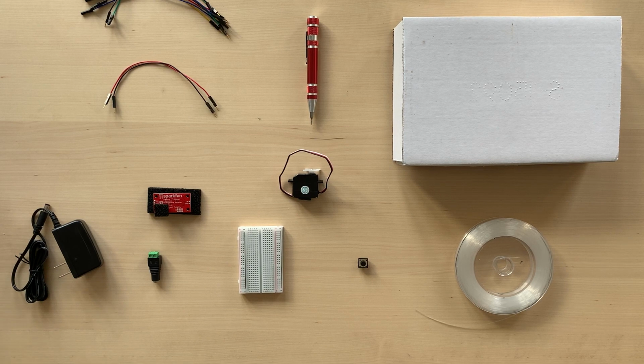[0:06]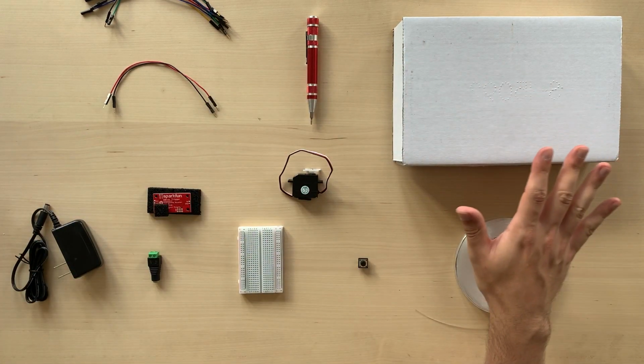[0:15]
Today we are going to build together the Co.Lab robotic arm kit that can perform a gripping motion. Here are all the tools that we will need.
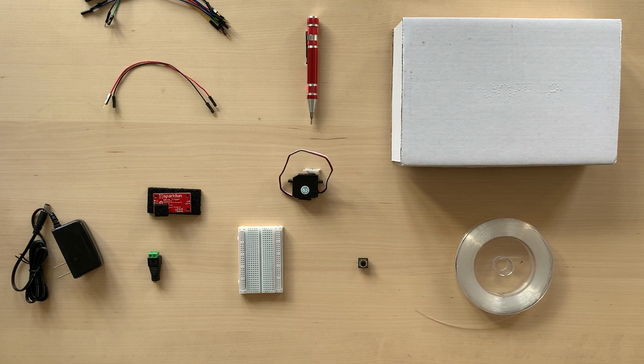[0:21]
The box the kit came with, some clear wire, a button, a breadboard, a barrel jack, a DC wall adapter, a servo trigger, a servo, screwdriver pen, a male-to-male jumper wire and a male-to-female jumper wire. We also need a pair of scissors, which doesn't come with the box.
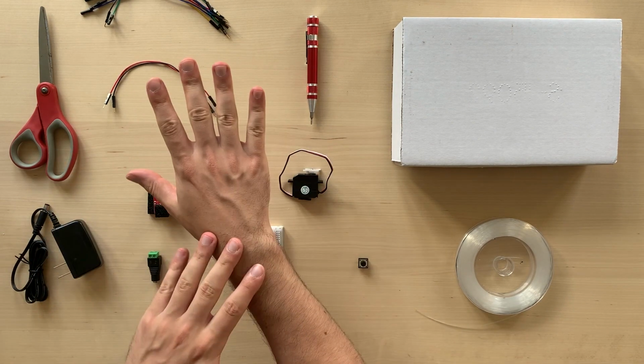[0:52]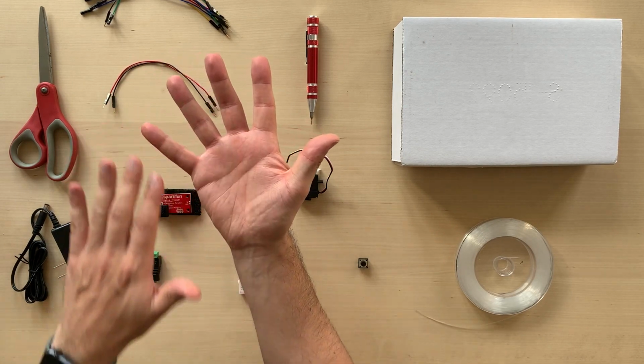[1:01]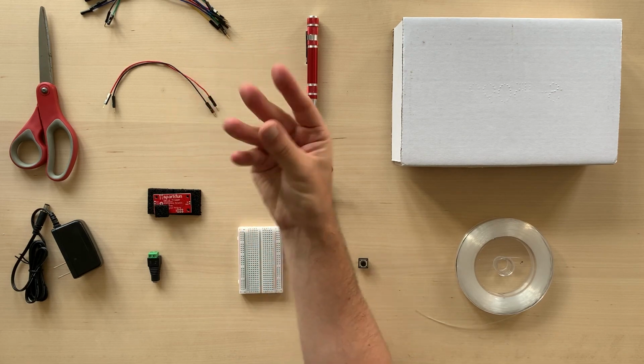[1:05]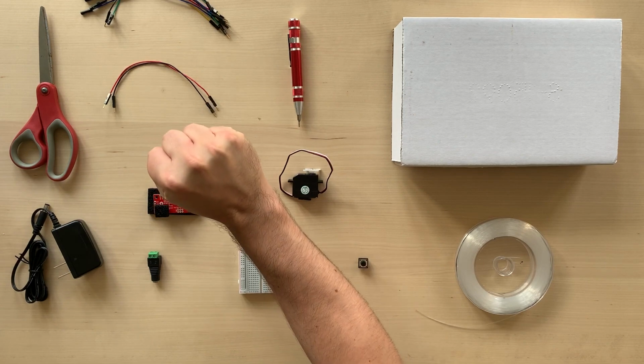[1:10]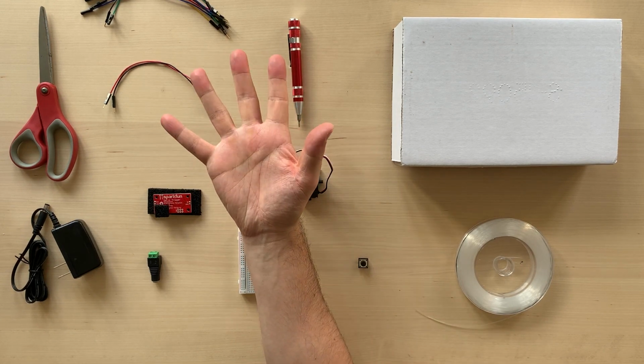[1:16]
So let's think for a second. What does a hand do? The human hand is a complex machine made up of skin, muscles, bones, nerves, and it allows us to grip items in many ways and with many different types of power. Think, for example, the difference when you're holding a pen versus when you're holding a heavy bag, right? Hands are really difficult, and because they do so many things, we will focus on one thing today, the gripping motion.
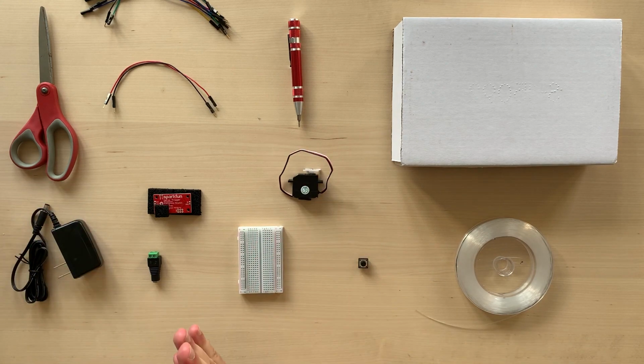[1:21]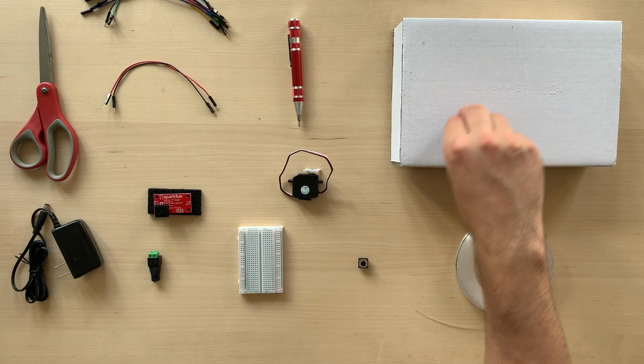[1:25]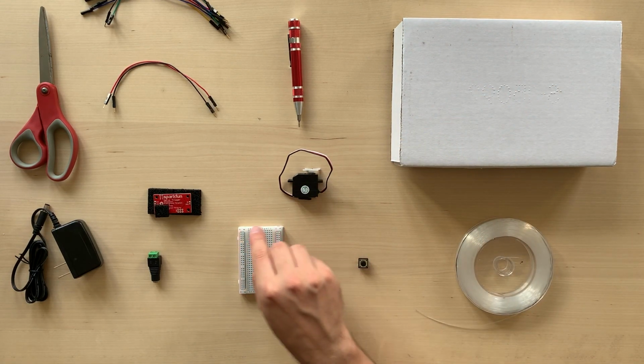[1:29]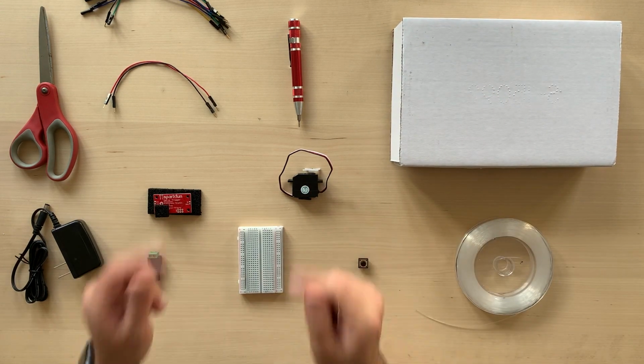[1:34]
To do this, we will use the cardboard box to build a simple hand, connect it to the servo, our motor, and then create a circuit to bring the power to the servo motor and move the hand. Let's start with our how-to.
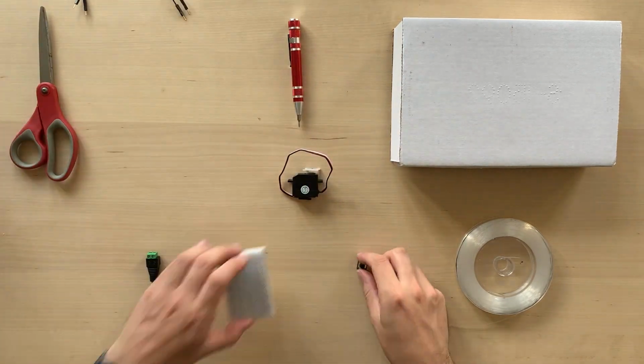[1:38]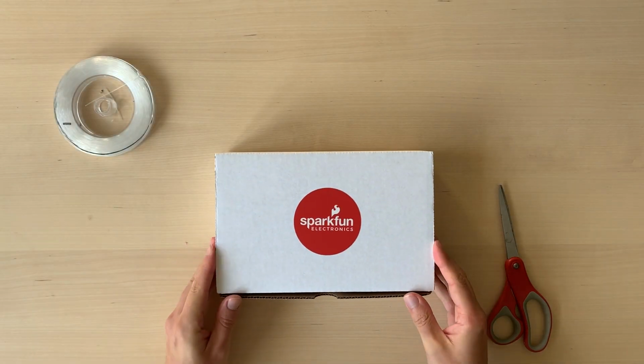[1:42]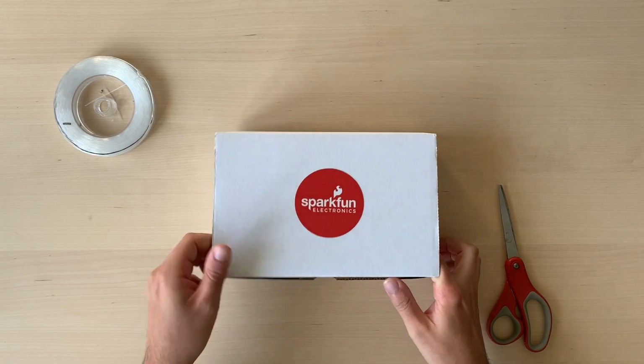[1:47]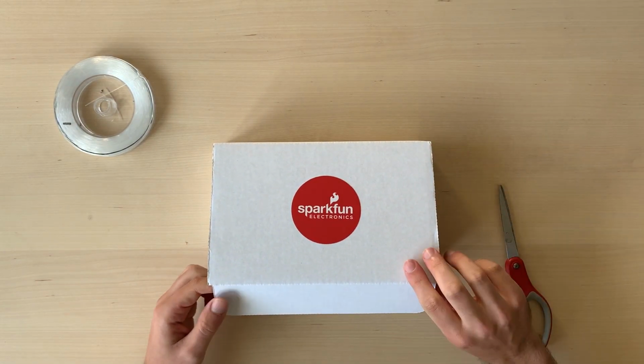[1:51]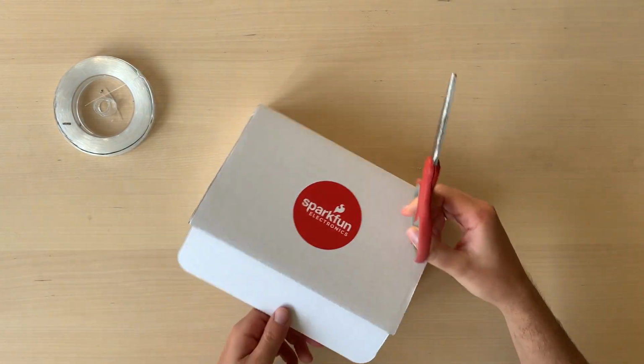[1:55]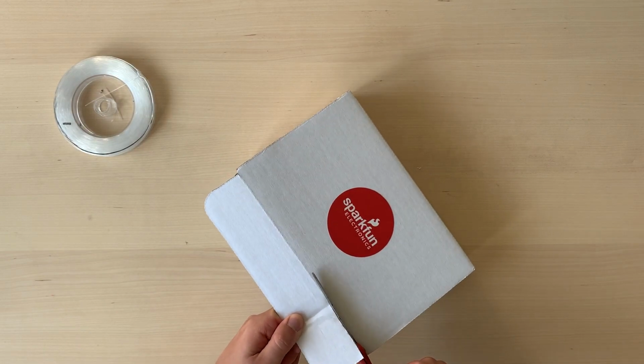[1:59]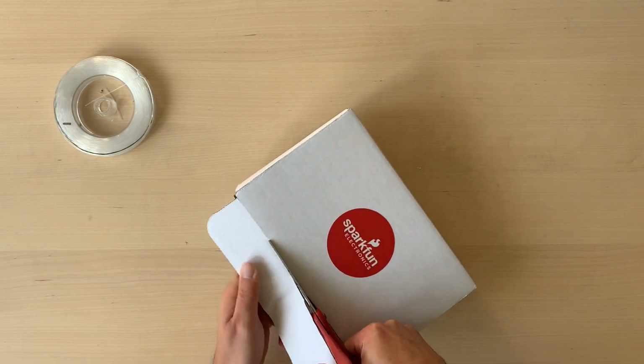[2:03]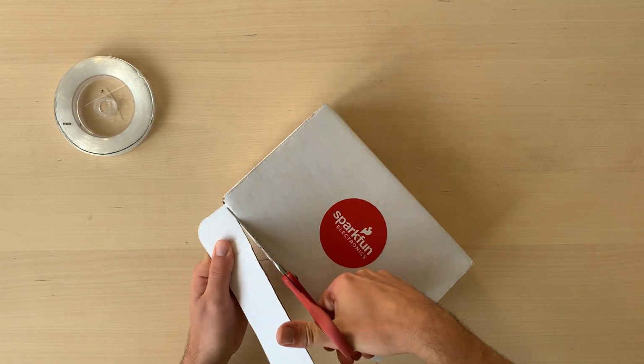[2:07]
Let's start with the box. This will become our hand, and to do this, start with the box opening facing towards you. The first thing that we need to do is to clear out the top of the box. The top of your box will probably have some flaps around, so we need to make sure to cut them out, like I'm doing now, and I'm just going to remove the first one.
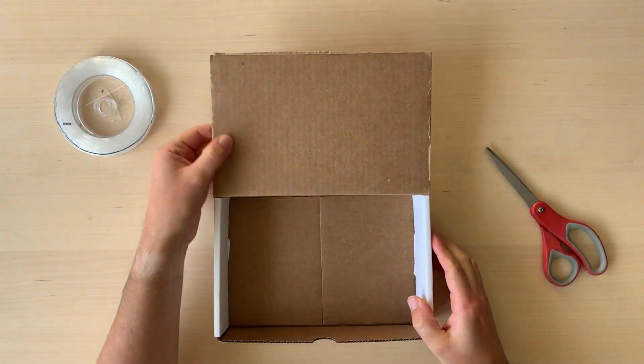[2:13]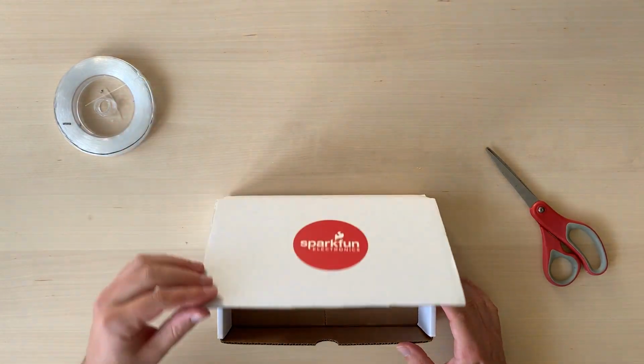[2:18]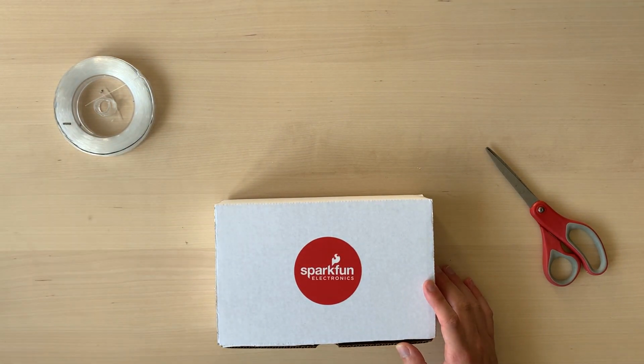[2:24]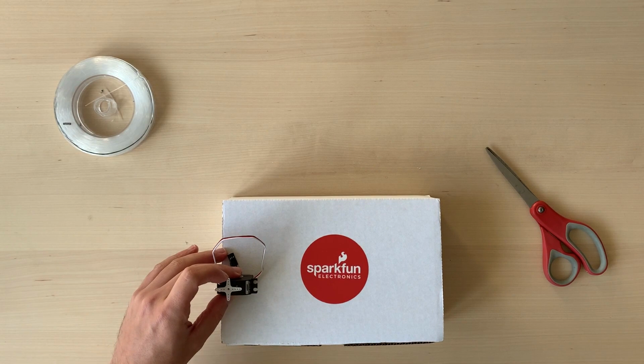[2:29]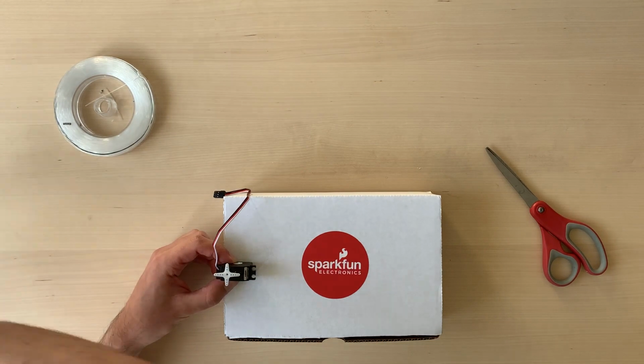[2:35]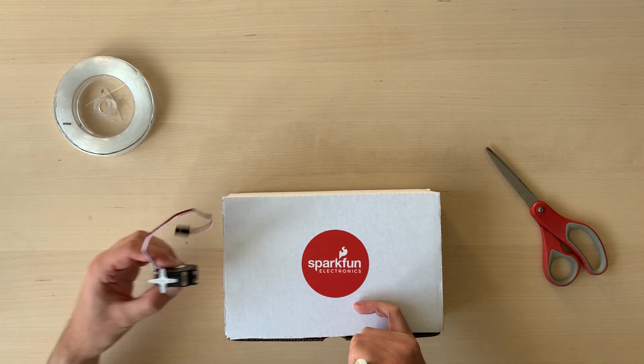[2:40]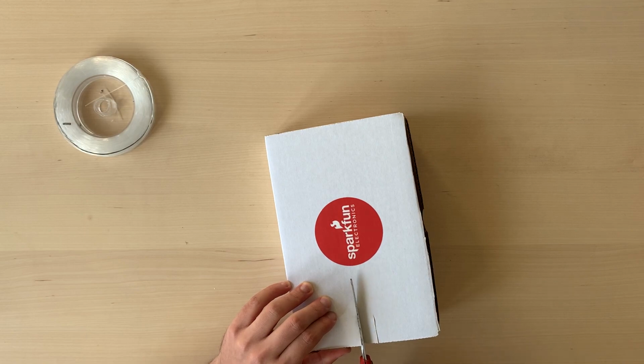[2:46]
Take your time, the cardboard could be a bit thick, but with a bit of patience, you should be able to get your lid nice and tidy, just like that. Now, on the left side of the lid, we need to create the space for our servo, our motor. And a good rule of thumb here is to use the servo to decide how big the incision has to be. I like to trace the outline with the little screwdriver to have a guideline. And then with my scissors, I take my time and I cut it out.
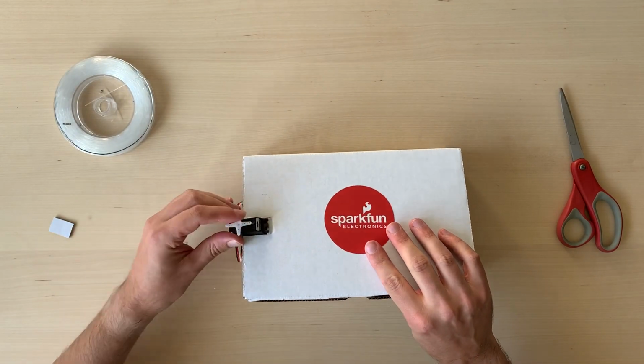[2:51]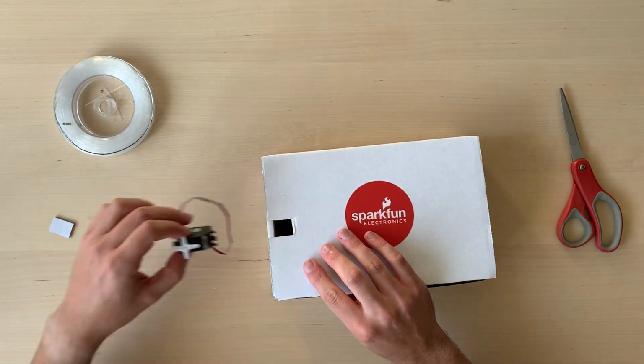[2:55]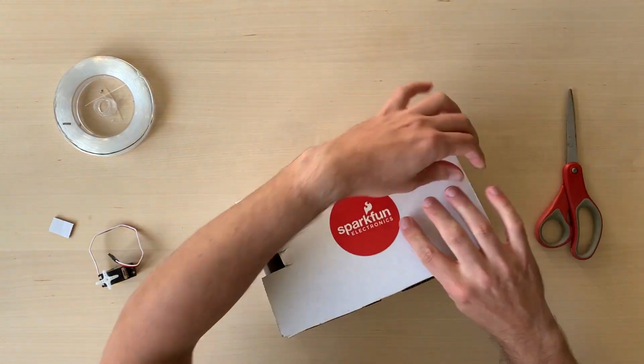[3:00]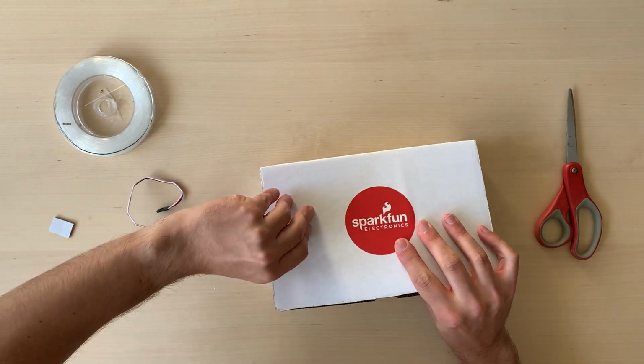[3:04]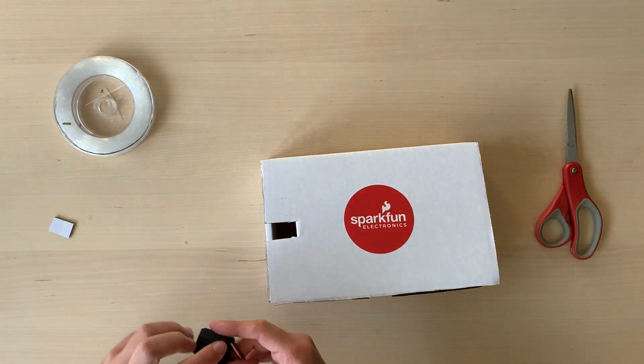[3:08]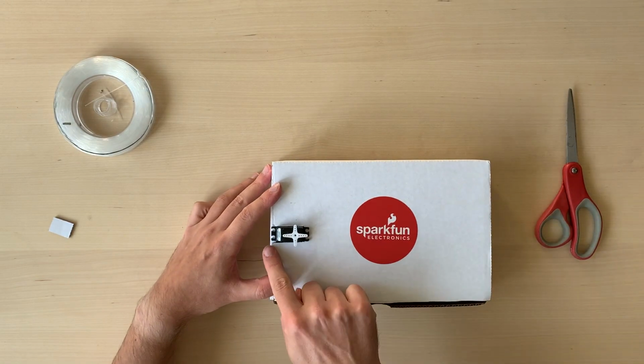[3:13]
Here I'm doing a little test to see if it actually fits. And it may take a test or two, and don't worry, it's okay if it takes a bit of time. The idea is for the servo to sit on top of the lid so that the bottom wire can connect inside of the box. So in this case, I'm opening up just a little bit more to make a bit more space so that the servo can sit comfortably on the side of the box.
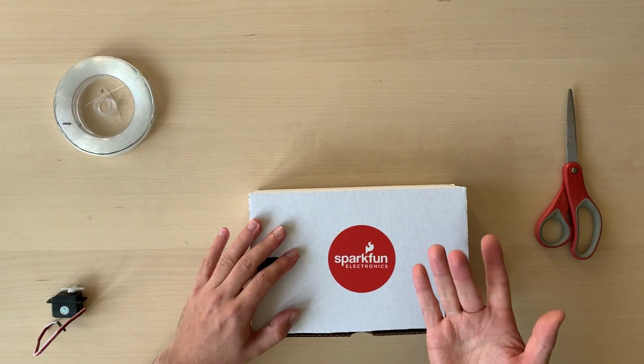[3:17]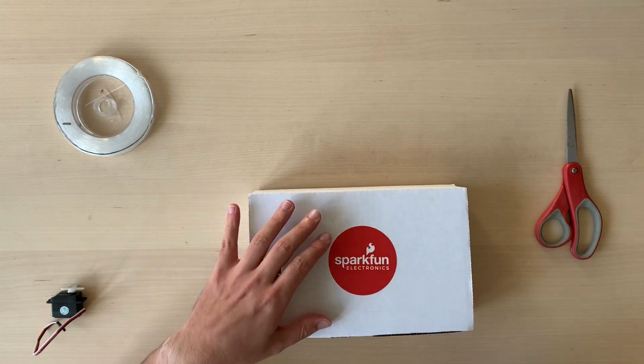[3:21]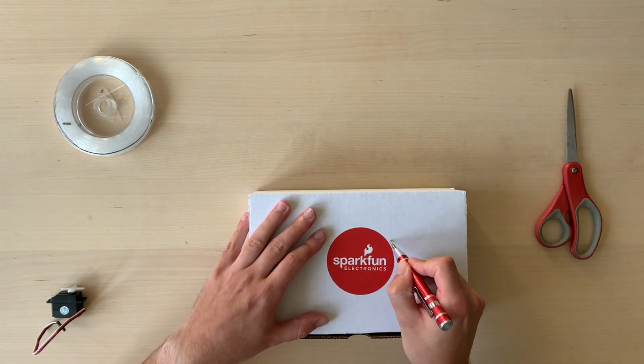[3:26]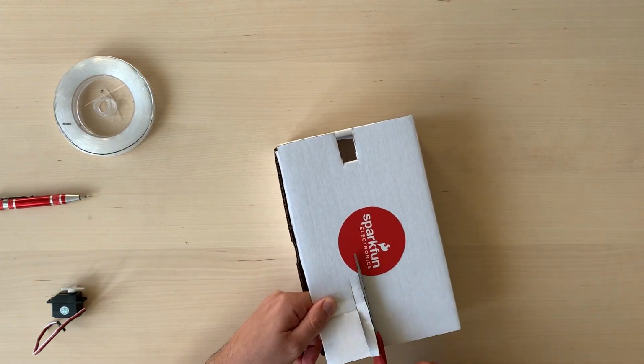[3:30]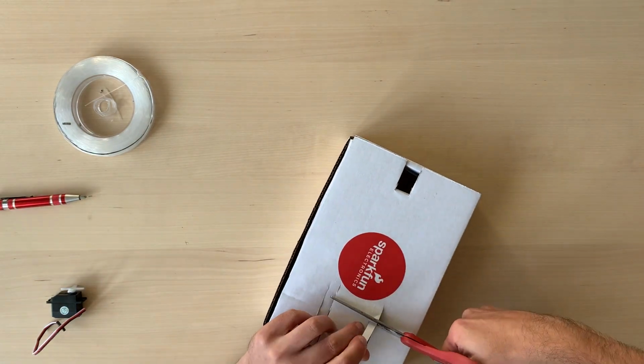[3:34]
On the right side of our box, we need to create the fingers for our hand. And in our case, we can create three fingers. We can just cut some small rectangles out of the right side so that we are left with three fingers.
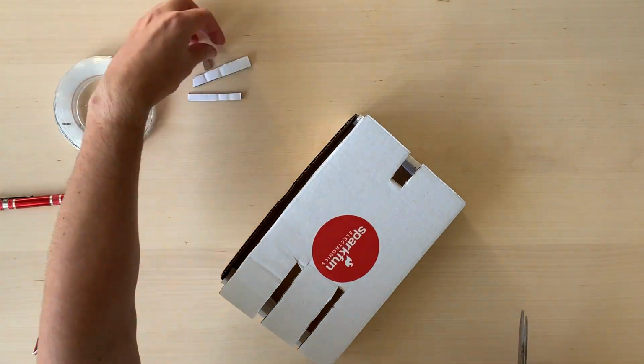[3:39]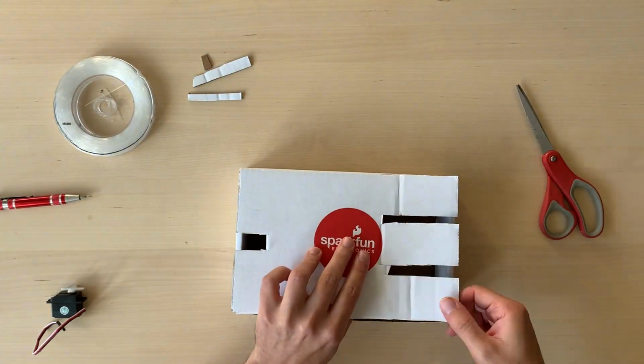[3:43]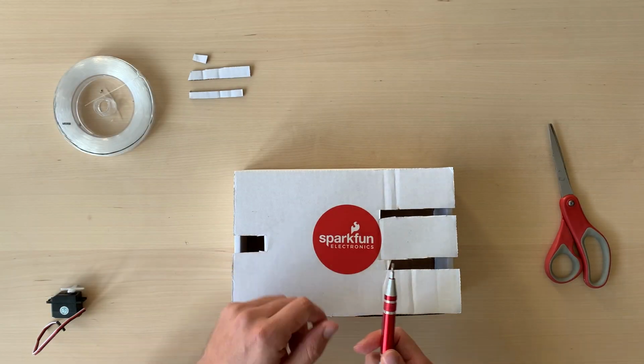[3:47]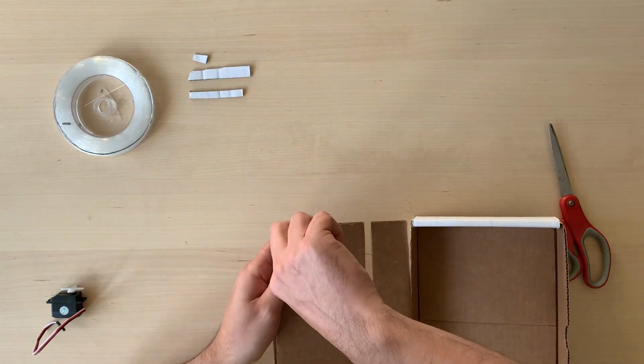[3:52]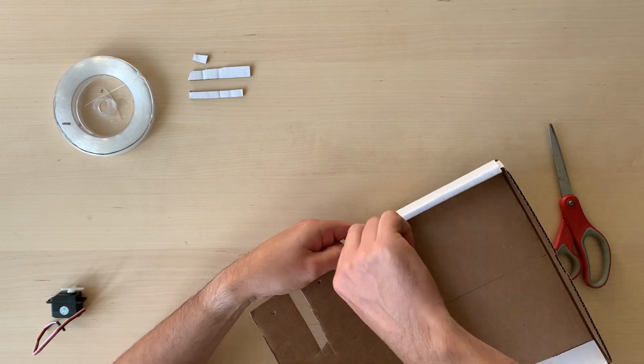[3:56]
Now we need to create some little holes in our fingers in order to connect the wire that will actually move them. So using the thinnest tip of the screwdriver, I recommend opening the lid and just piercing at the top of the finger, just a tiny little hole, enough to let the clear wire pass through later.
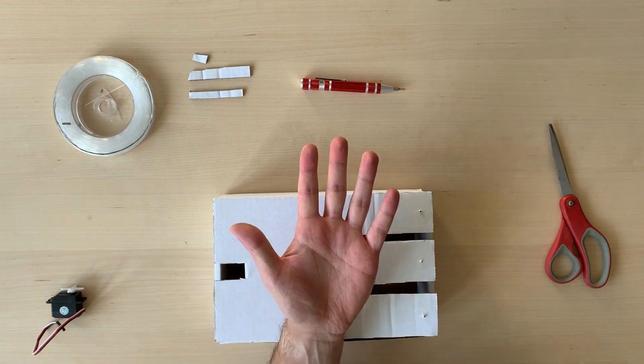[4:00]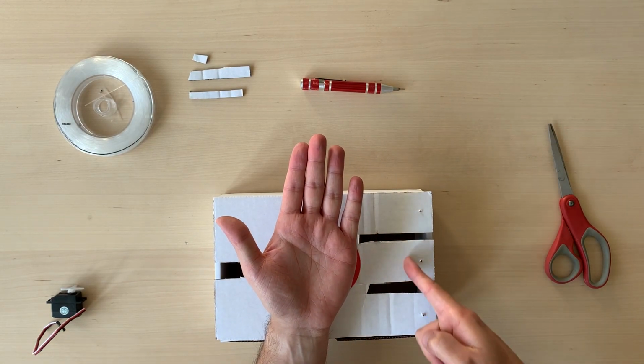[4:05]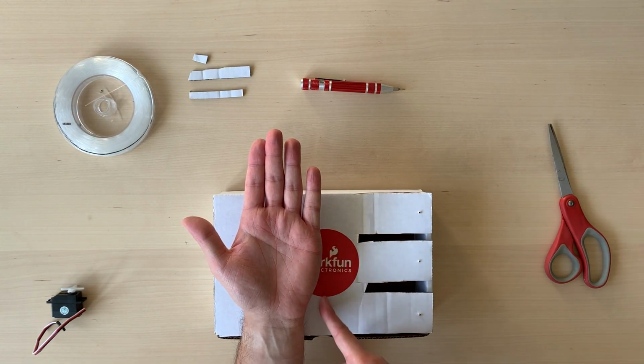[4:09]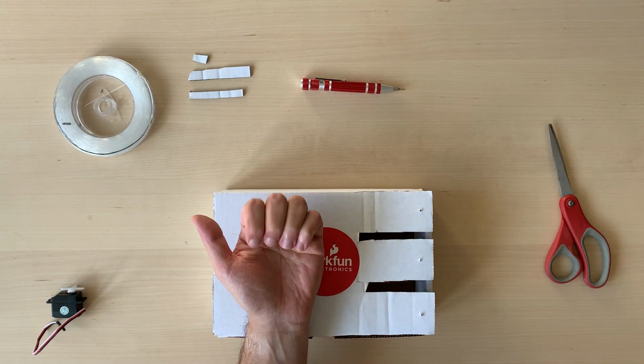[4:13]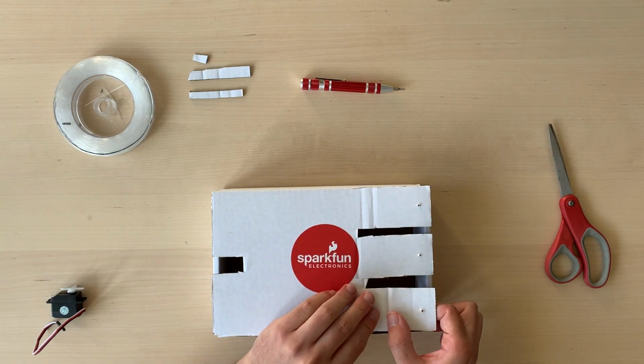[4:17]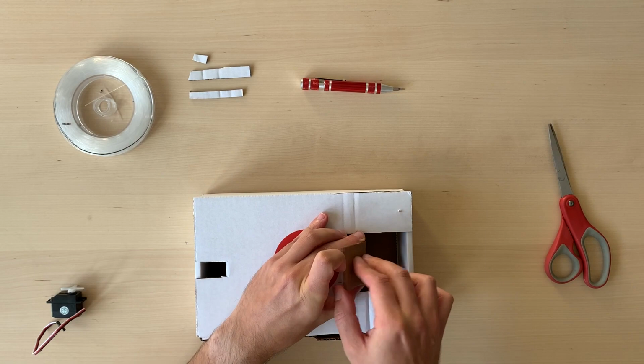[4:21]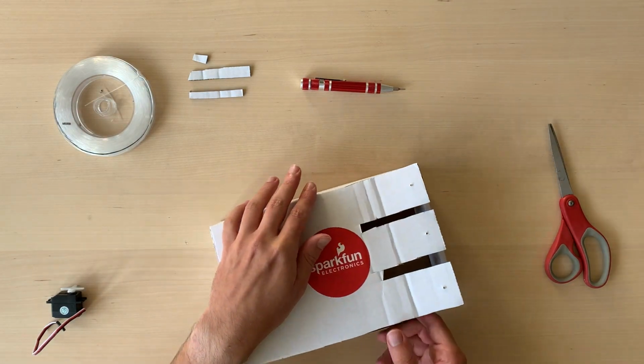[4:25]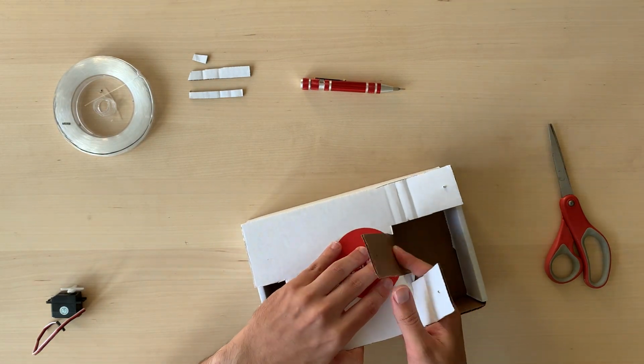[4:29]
The next thing we need to do is to bend them, just like normal fingers. We will do three folds in our case. One at the top, one where they connect to the rest of the hand, and a third fold a little bit before the fingers to simulate how the hands fold. So this could be one, this is the second, and that's the third finger. So first bend, done. Now we bend them where they connect to the box.
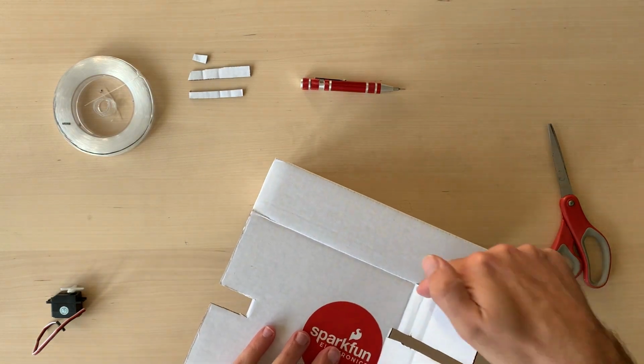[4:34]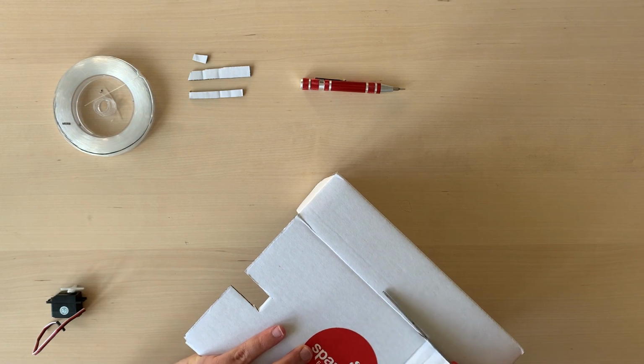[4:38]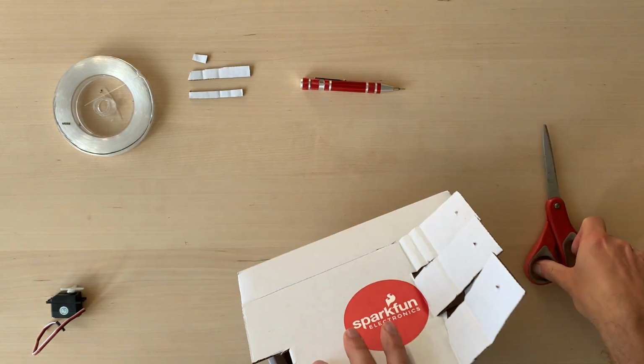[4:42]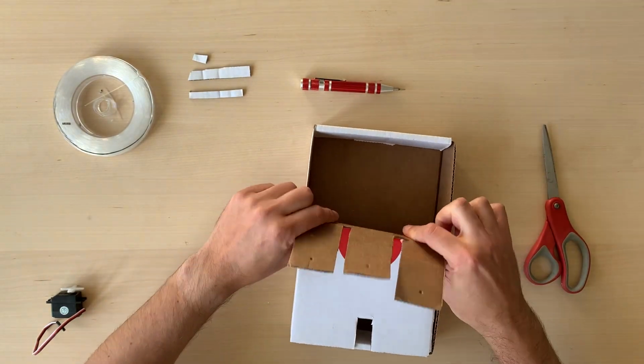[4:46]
Very good. And to do the third one, we actually need to extend the cut just a little bit. So using the scissors, I will cut through just a little bit more. And this will allow us to do a third fold of the whole hand. Look at this, perfect.
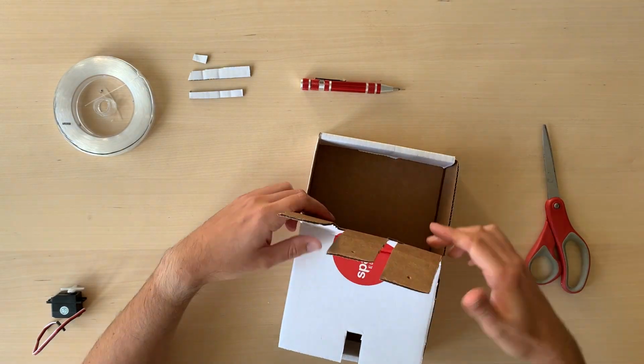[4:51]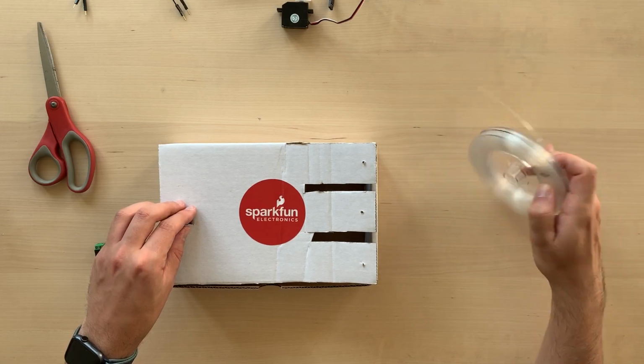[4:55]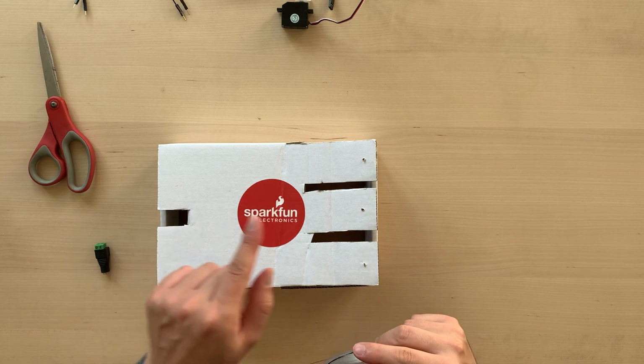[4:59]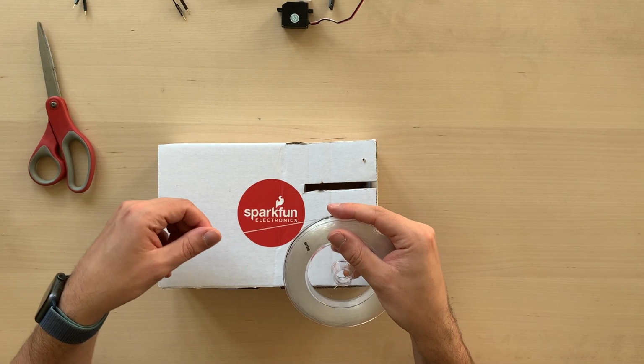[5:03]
Looks like a hand ready. Now, it's time to connect them with the wire. There is a very easy measure for the wire, which is 1.5 length of the box. And this is a very easy way to measure it together with me.
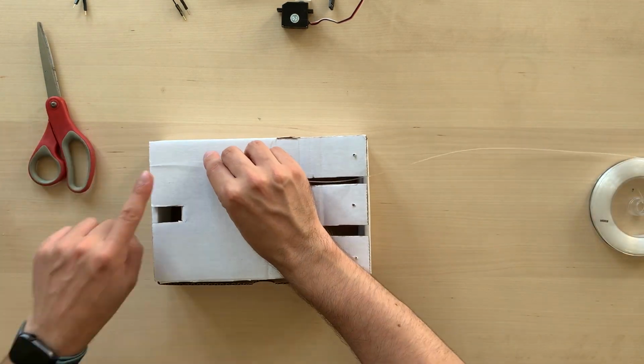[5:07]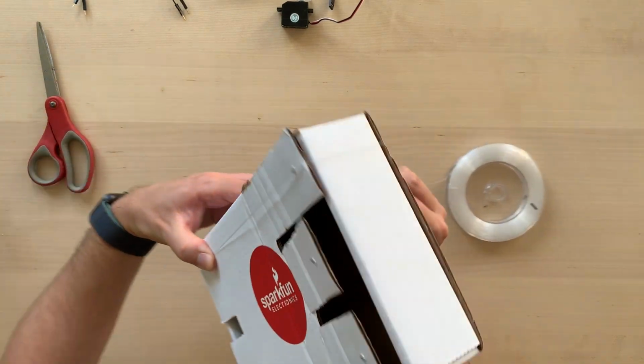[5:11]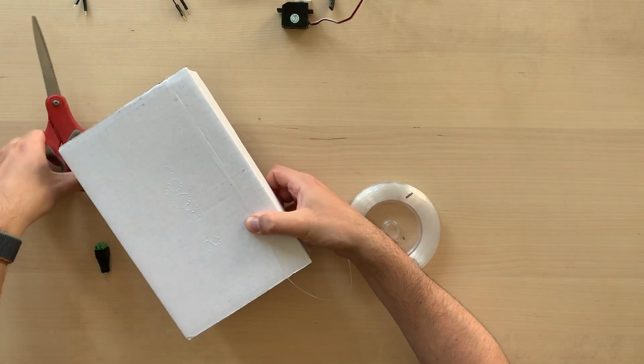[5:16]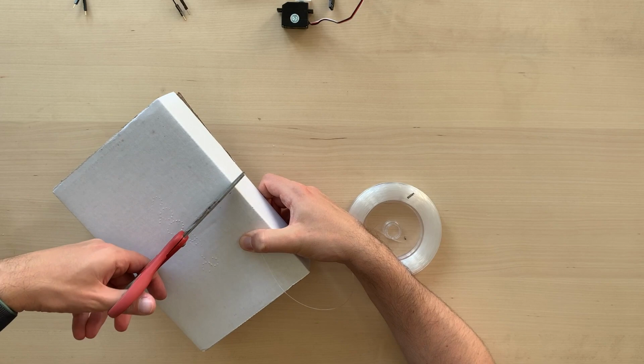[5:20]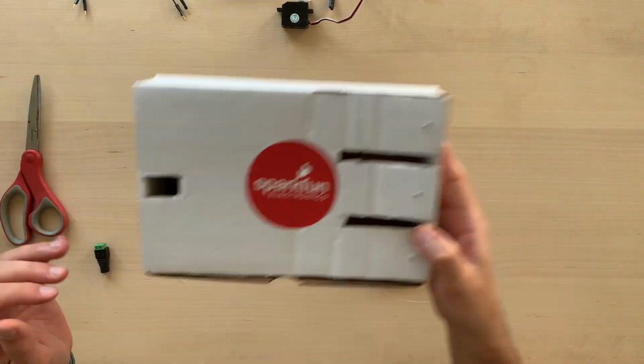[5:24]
So we put one side of the wire at the beginning of the box on the top, we run it all around the box on the other side, and then we cut it halfway through the back. This will give us 1.5 length of the box. Nice and easy. Now, we need three wires because we have three fingers, and an easy tip to save a
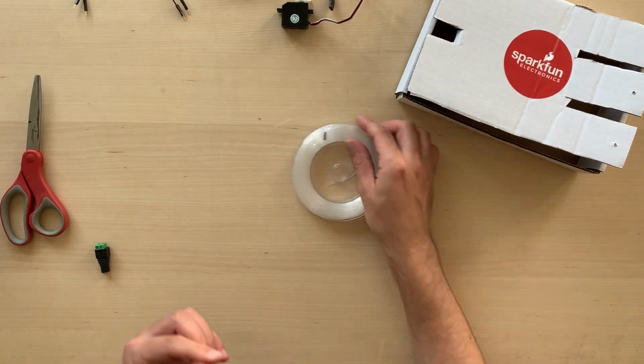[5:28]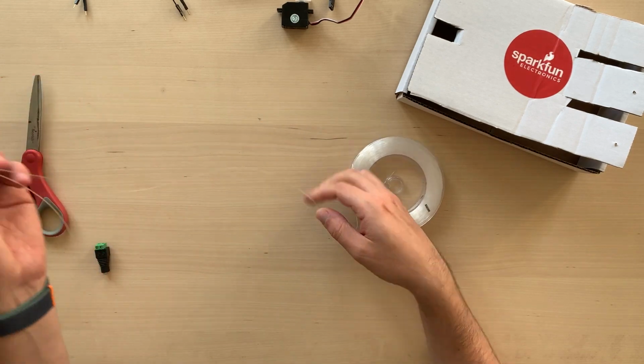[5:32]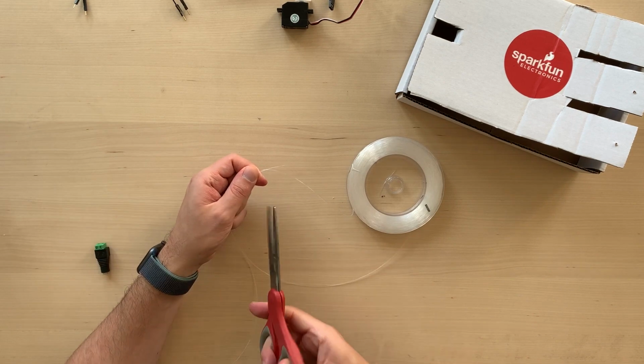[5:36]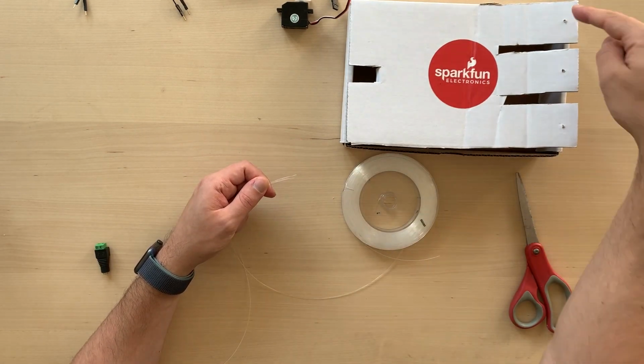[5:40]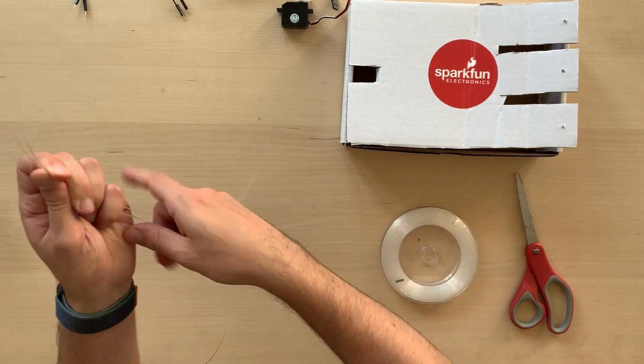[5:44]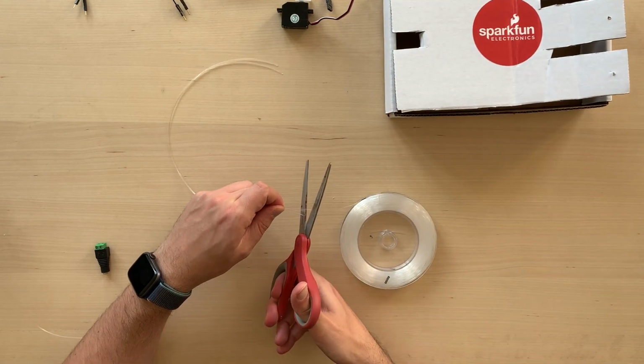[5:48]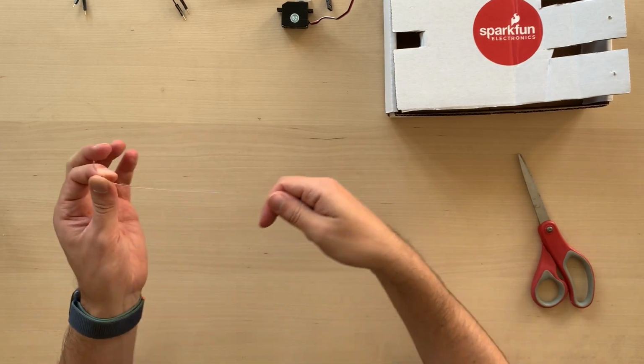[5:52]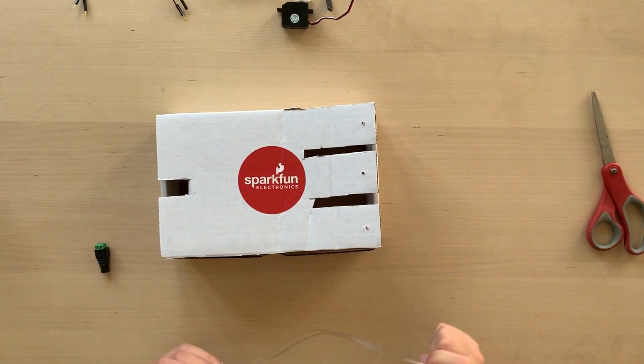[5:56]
bit of time instead of measuring all the time is to use the first wire to measure the other two. So here's my second wire, cutting that out, and the third one for the third finger, of course. We use the same little trick. And cut. Perfect. Now we have the three clear wires for our fingers, and we can start connecting them.
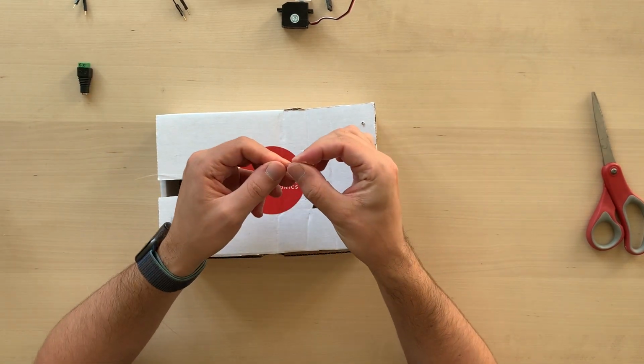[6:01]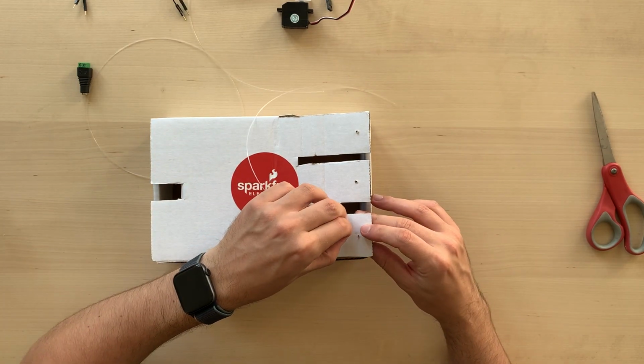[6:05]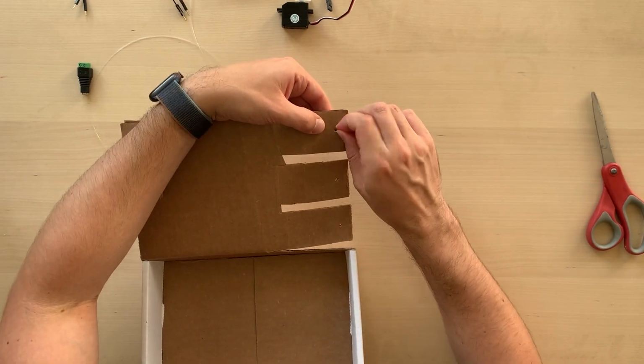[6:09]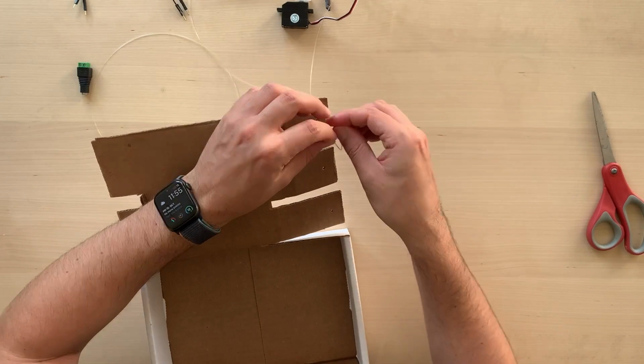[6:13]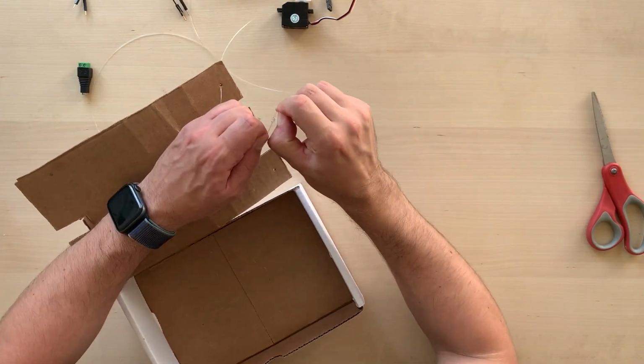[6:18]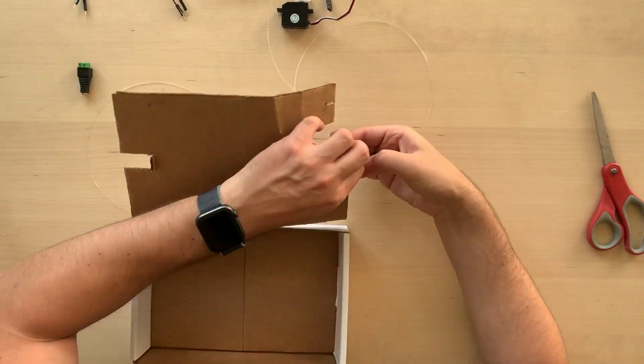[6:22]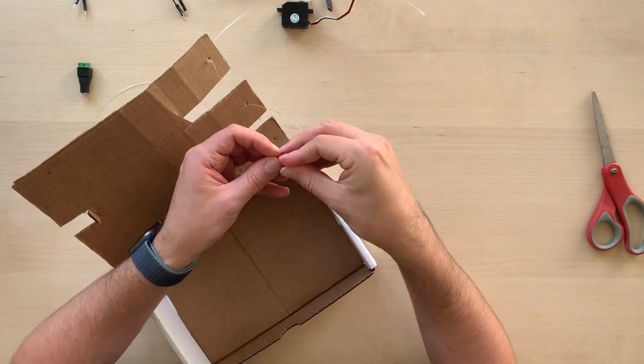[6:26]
What we need to do is to run the wires from the top into each one of the little holes and tie them with a little knot underneath the lead, just like this. We turn it over and then we tie them up. I suggest doing a double knot just to make sure that the wire stays nice and safe. Don't worry if the clear wire is a bit hard to bend to do the knot. It took me a little bit of practice, so make sure to take your time.
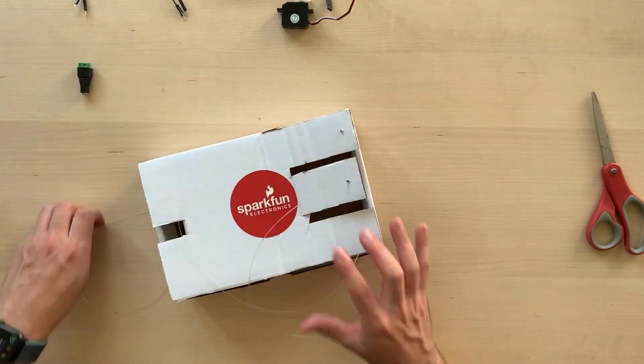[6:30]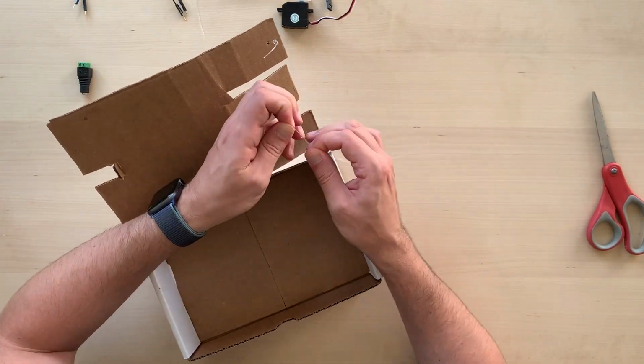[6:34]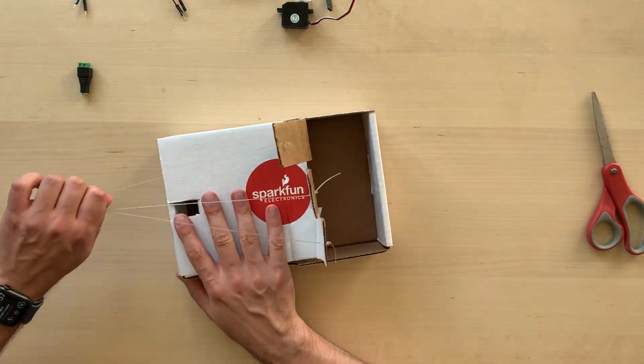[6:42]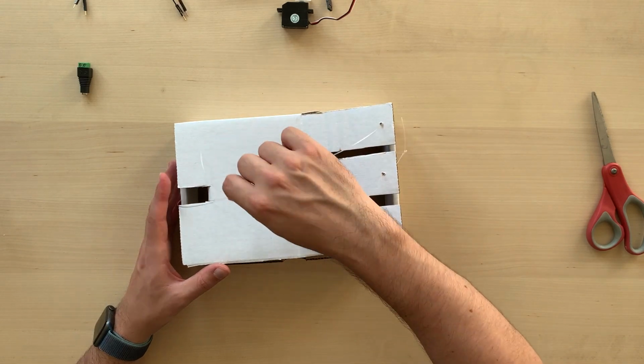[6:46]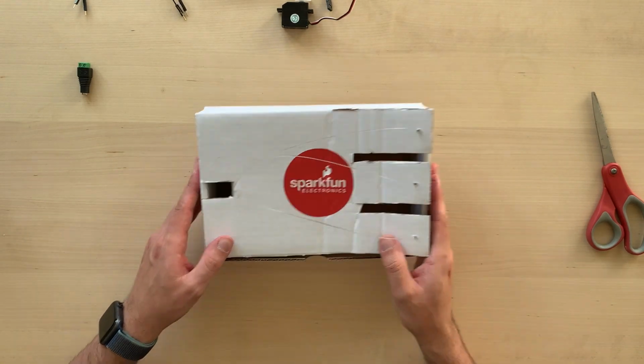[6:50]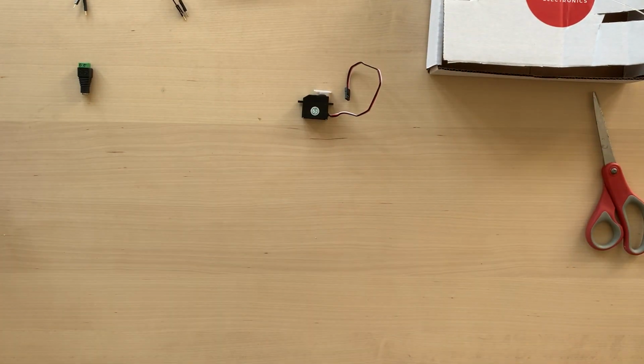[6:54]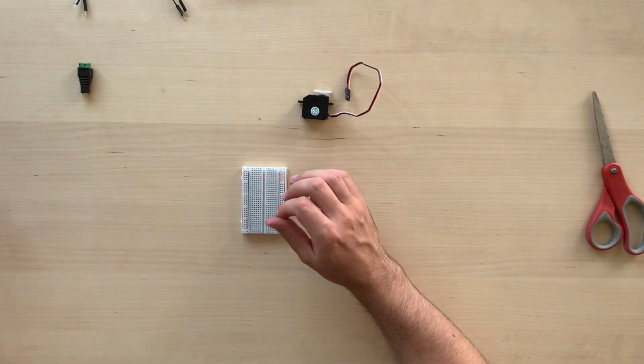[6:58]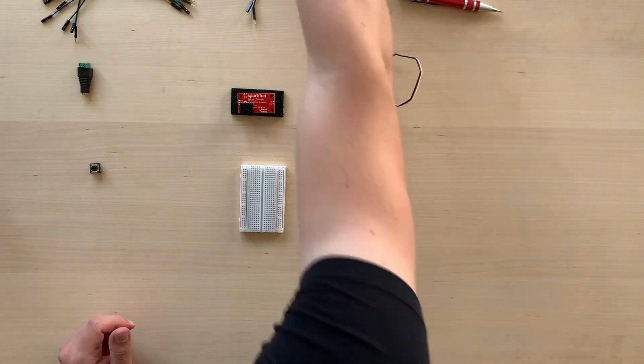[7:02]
That should do. Perfect. So now we have our three wires, and you can see how they will eventually connect on the other side where the servo will be. But for now, the hand is done and we can move forward to the next part of our build, which is the circuit. What is a circuit?
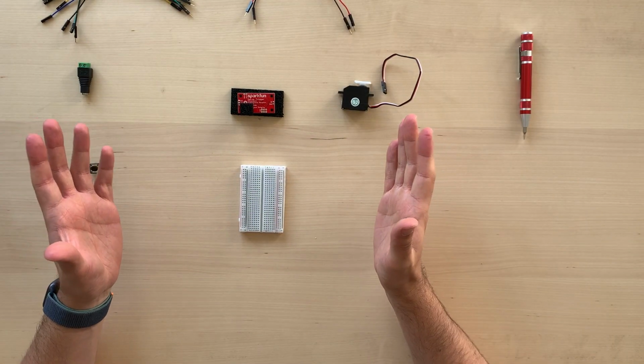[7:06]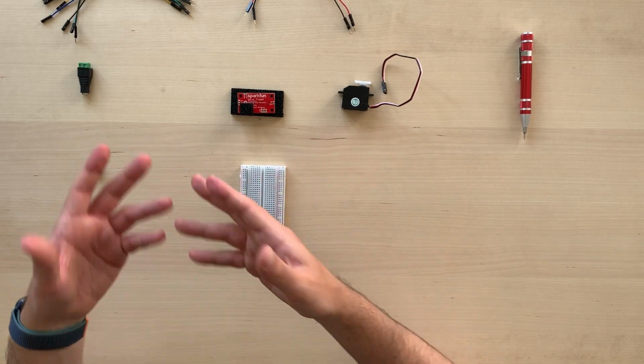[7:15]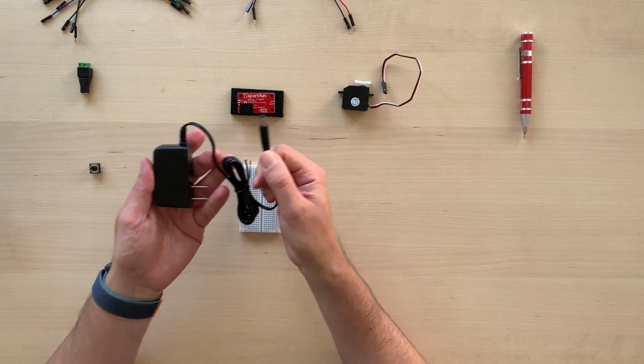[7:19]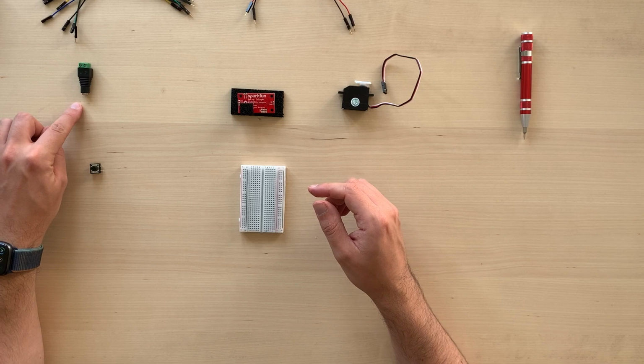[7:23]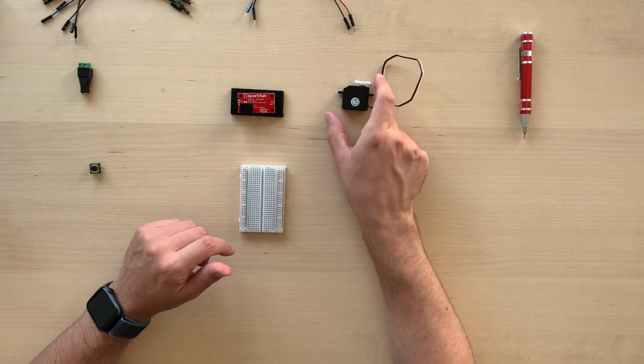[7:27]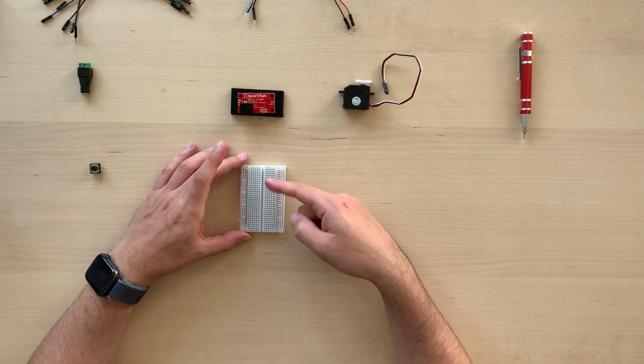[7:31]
Normally, every circuit is a closed loop of electricity that can travel around. And every circuit at least has a power source. In our case, we have a wall adapter. In our case, this will connect to a barrel jack. And then we have a load. That's what's being powered. For us, it's going to be the servo. And then a circuit path, which is the actual path where the current will flow.
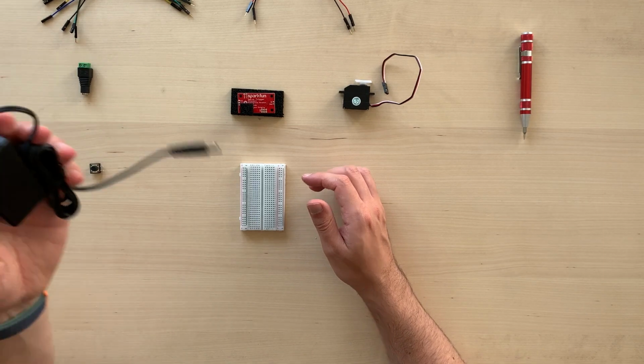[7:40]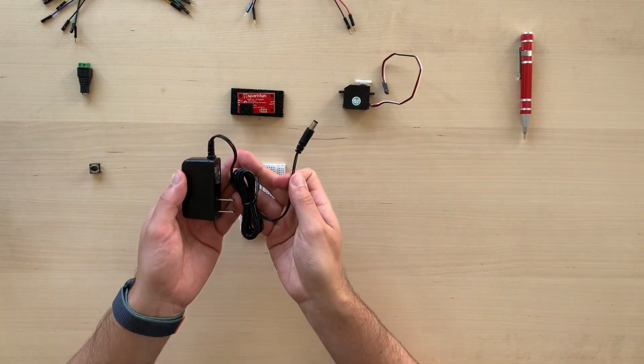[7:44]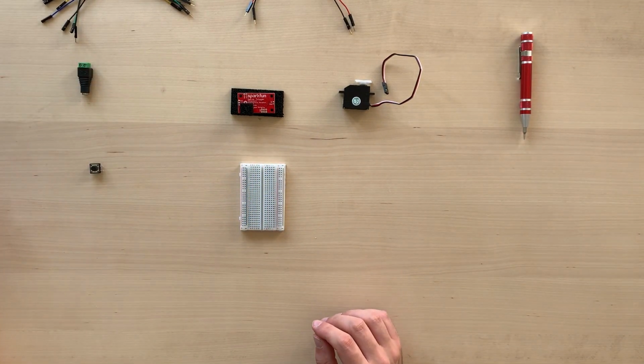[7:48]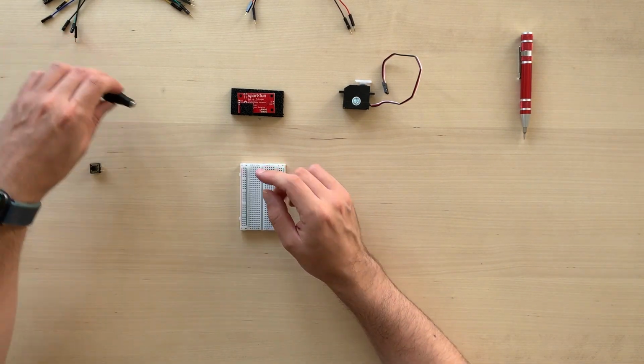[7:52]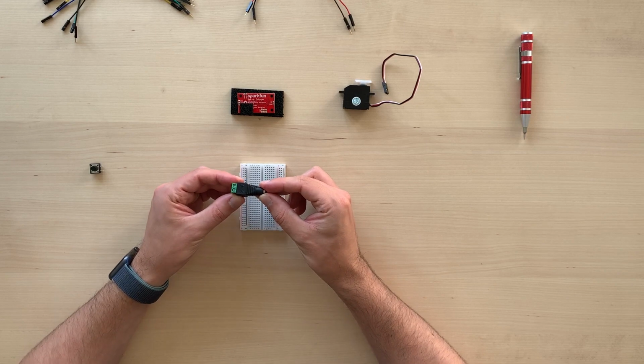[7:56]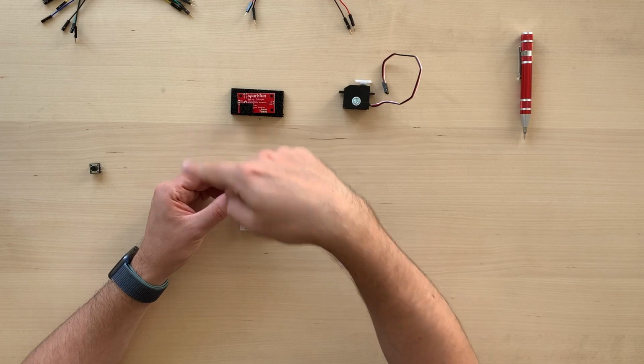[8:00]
In our case, because we use a wall adapter, we want to make sure that this is the very last step. So for the time being, let's leave the wall adapter on the side and let's focus on preparing the barrel jack. The barrel jack will bring the current into our breadboard, so we need to prepare it and connect it using jumper wires into the breadboard.
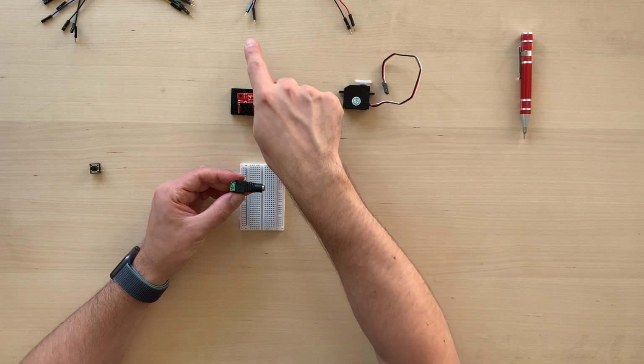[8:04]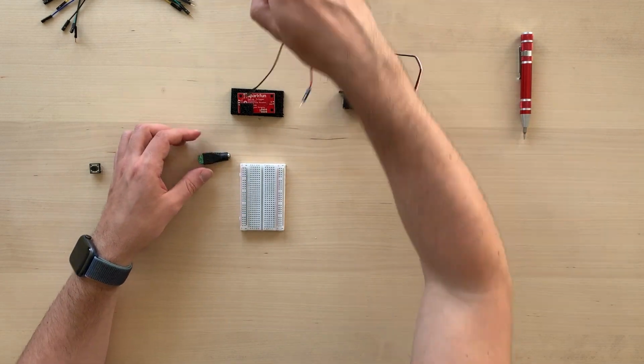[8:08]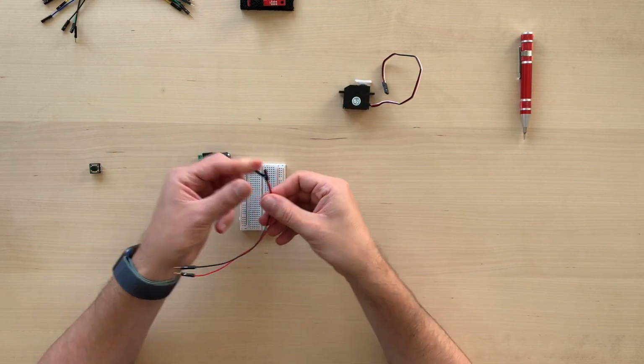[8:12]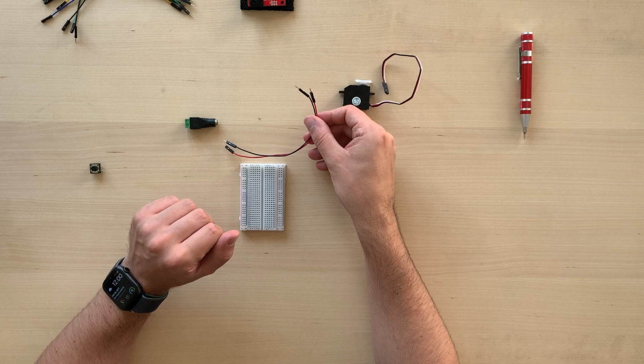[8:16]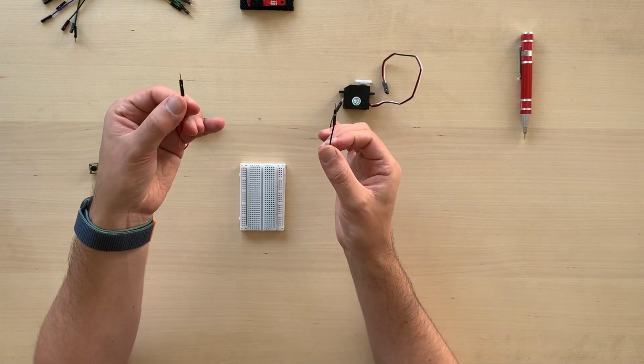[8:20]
To do this, we'll need to use the two jumper wires with male-to-male connection. The male connection is the one with the metal pin sticking out. You can choose any color of jumper wires you want. In my case, I will use the traditional ones of electronics, so red for positive and black for negative.
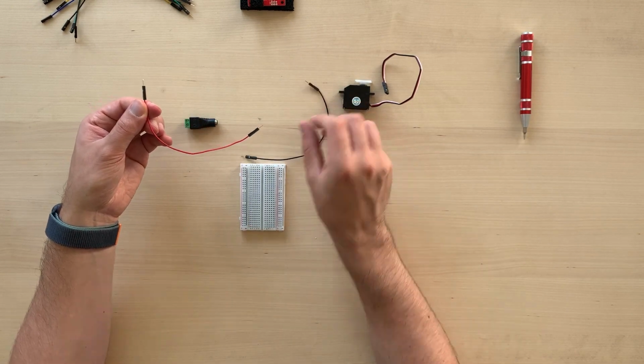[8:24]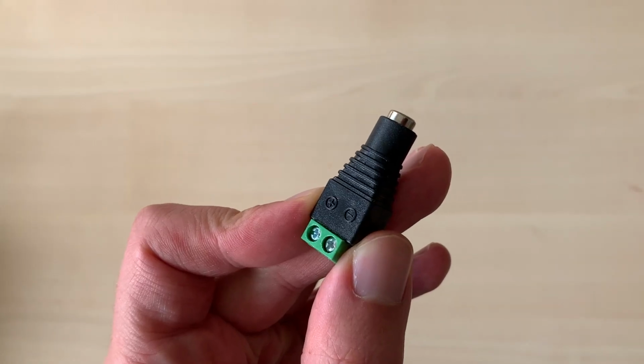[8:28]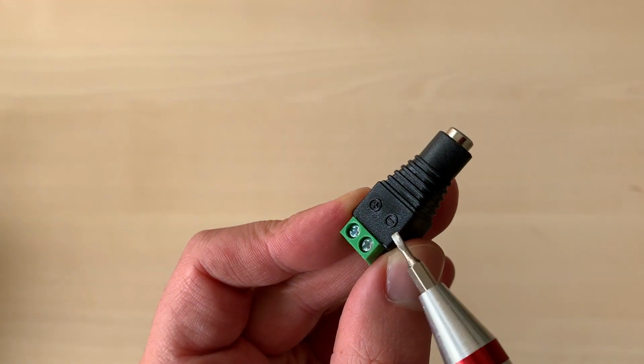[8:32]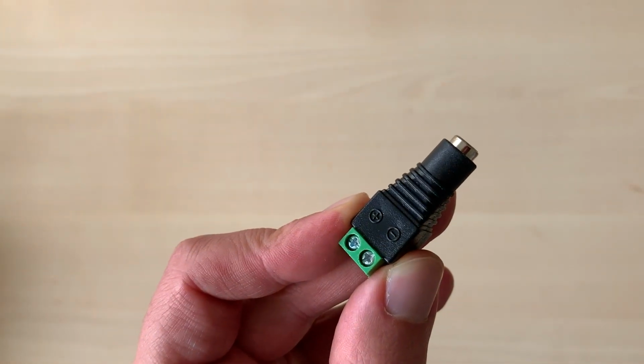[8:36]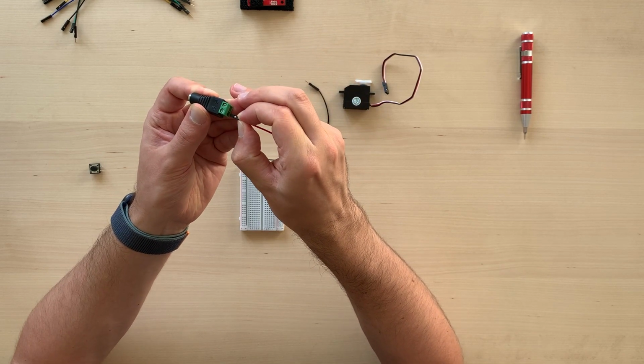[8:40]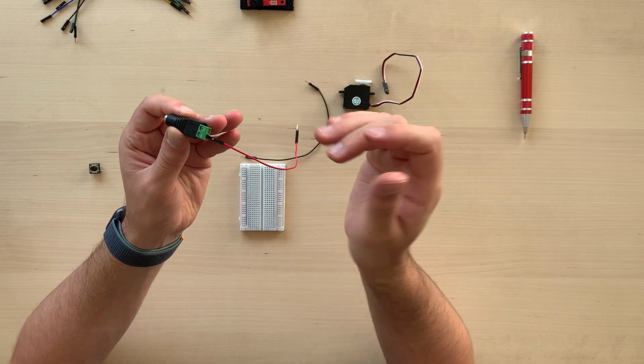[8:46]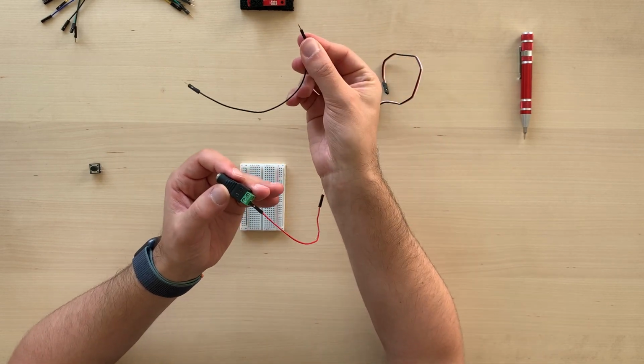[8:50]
If you look closely at the barrel jack on the plastic side, you will notice a plus and a minus. This indicates which part is the negative and the positive. So for me, the red wire is the positive, so I will slide it into the positive end. Nice and snug, carefully. And the black wire, the negative one, will connect on the negative side of the barrel jack.
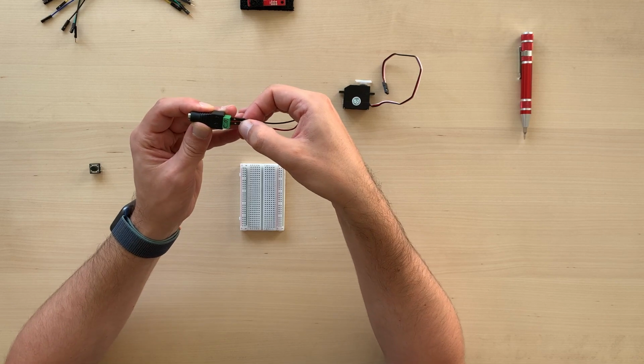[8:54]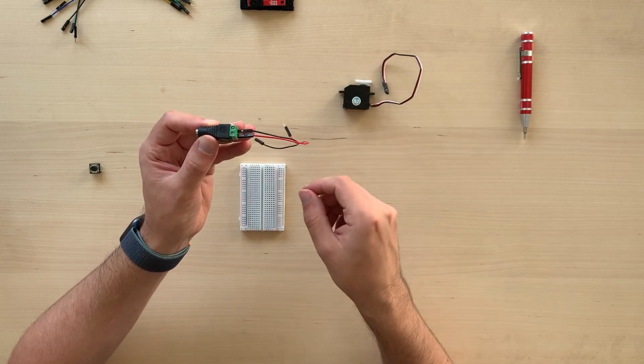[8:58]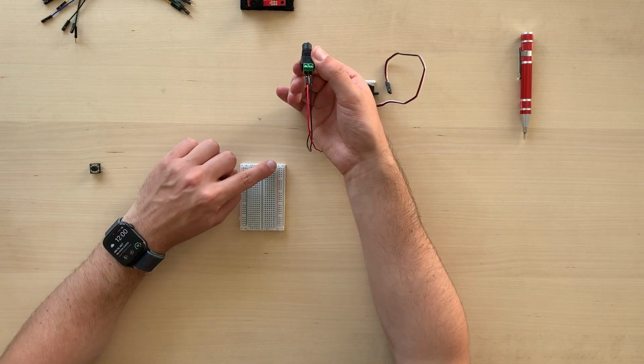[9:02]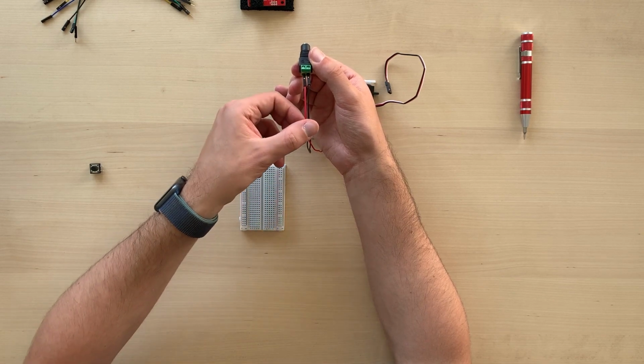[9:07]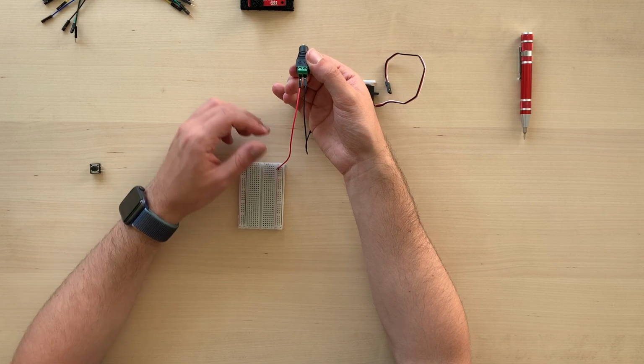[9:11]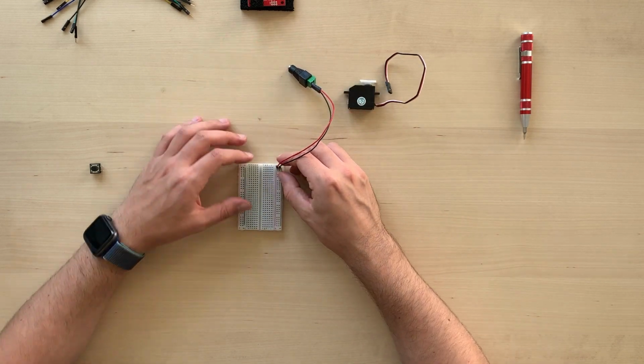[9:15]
Then we will connect the two wires into the power rail of our breadboard on the right side. You can see we have a red line for positive, that's where we put our cable, and a black line for the negative, and that's how we connect it. This will bring power all through the breadboard.
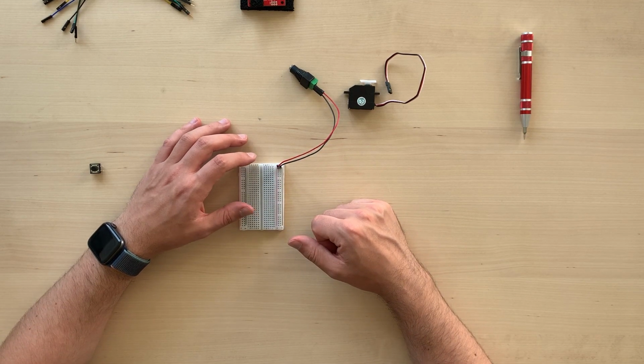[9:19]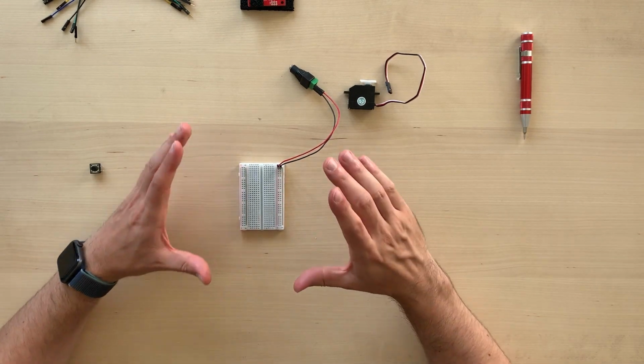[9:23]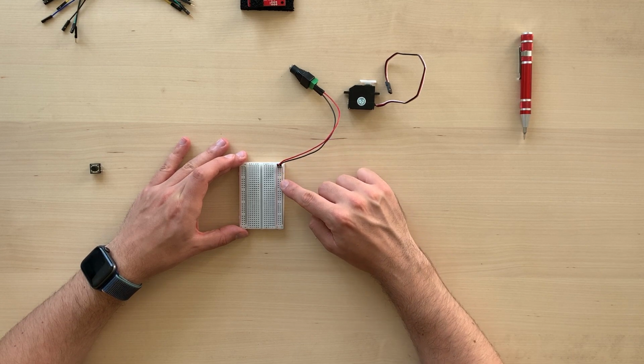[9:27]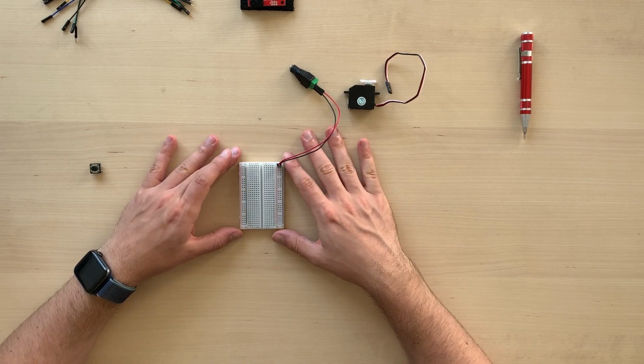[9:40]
In the breadboard, you see we have on each side two columns of holes that have two colors on the side. One is red and one is black. These are called power rails. Each hole is connected to each other, so if power is connected to one hole in the column, it will also be connected to all other holes in the column. So this will allow us to bring the current across the breadboard.
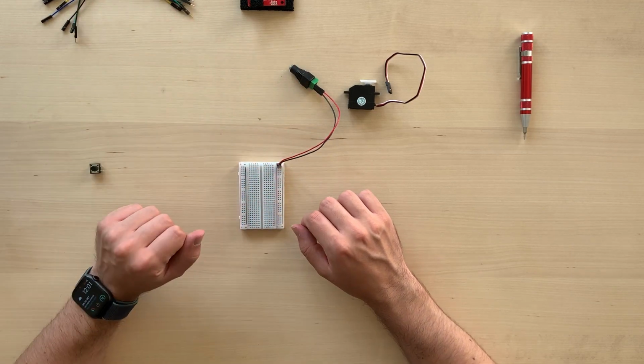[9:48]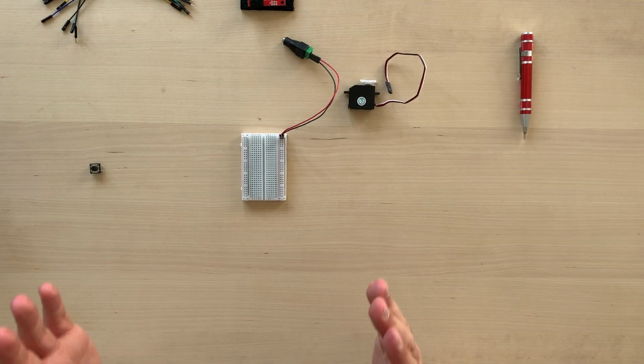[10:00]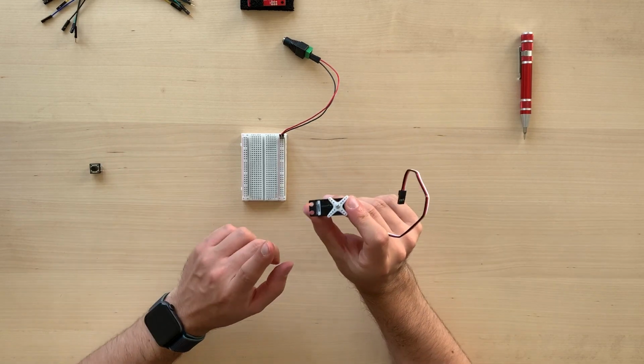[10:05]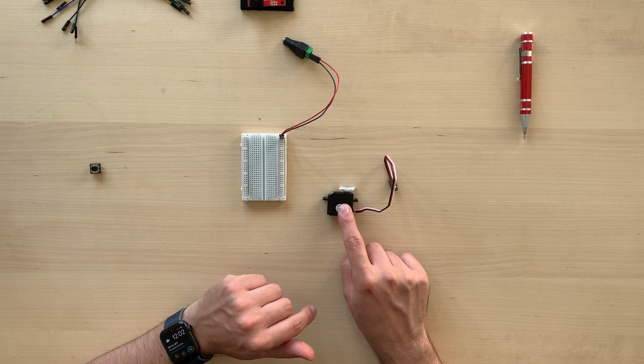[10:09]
A fun fact, breadboard is called breadboard because in the past, when people didn't have all the nice tools that we have today, they actually used the breadboards where they used to make sandwich to design circuits. But now let's build our motor. This is what will move our hand, the servo. In order to do this, to build our muscle, we need four parts.
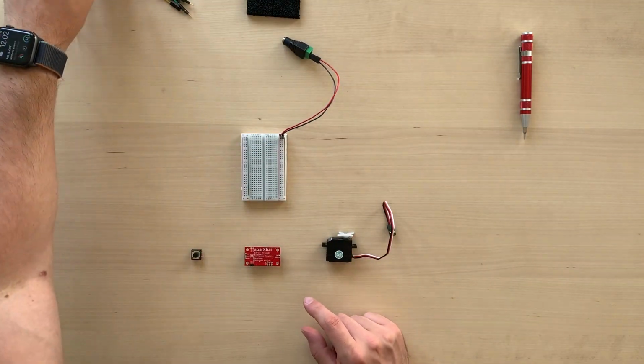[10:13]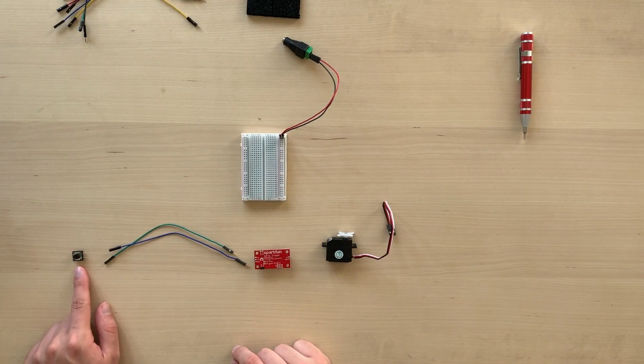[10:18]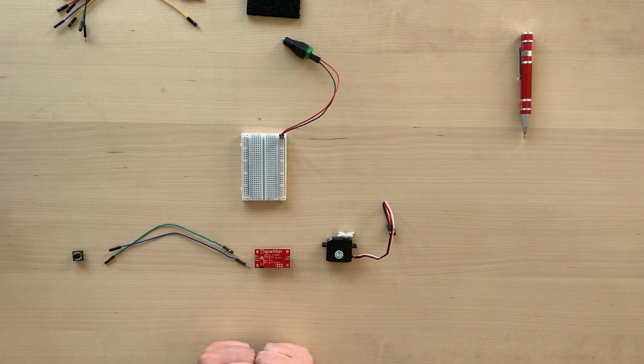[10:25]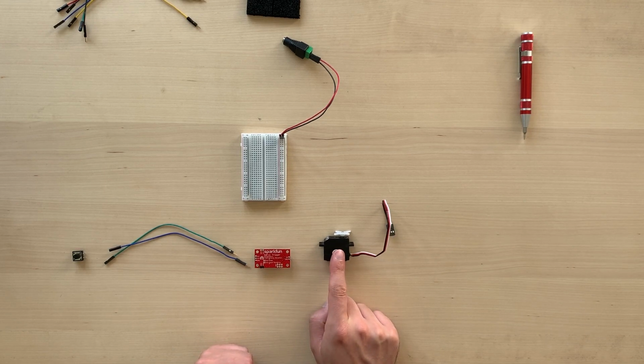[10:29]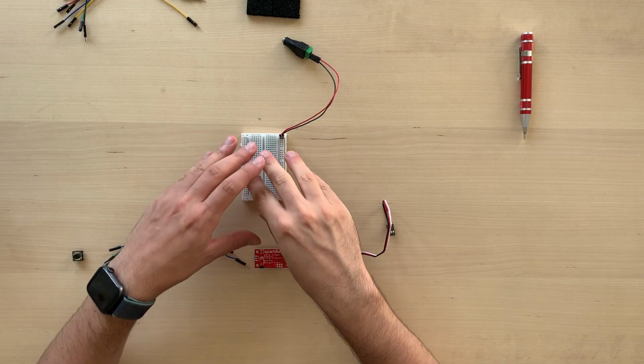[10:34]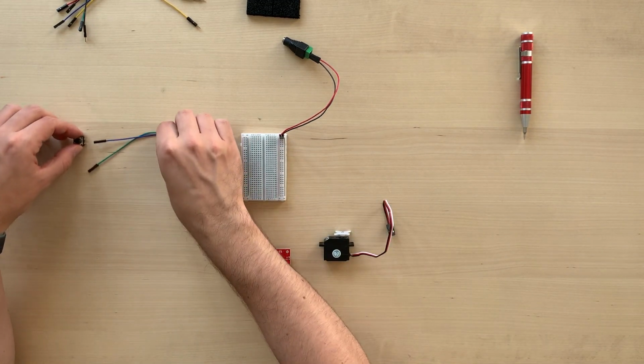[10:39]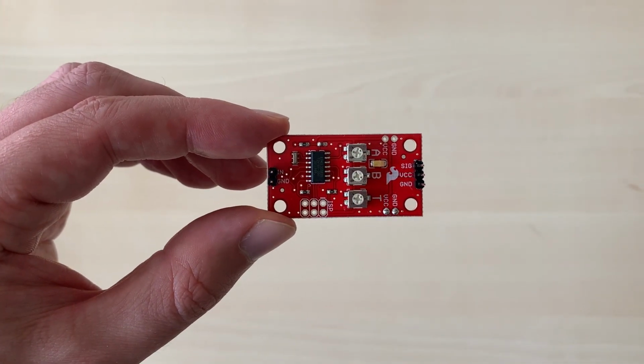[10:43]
So here's how this is going to work. We have a button, we have two jumper wires that will connect into the servo trigger. This is like the brain of our hand, what will actually tell the motor, our servo, when to move and how to move. So in our case, we will then build all of these circuits on top of the breadboard. And let's start with taking a closer look at the servo trigger.
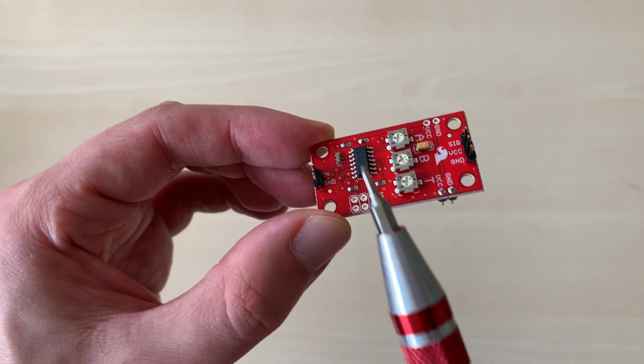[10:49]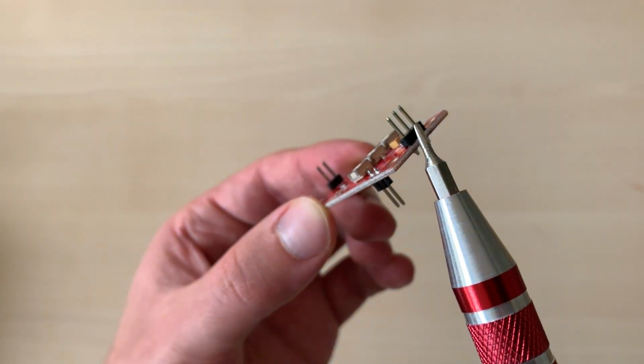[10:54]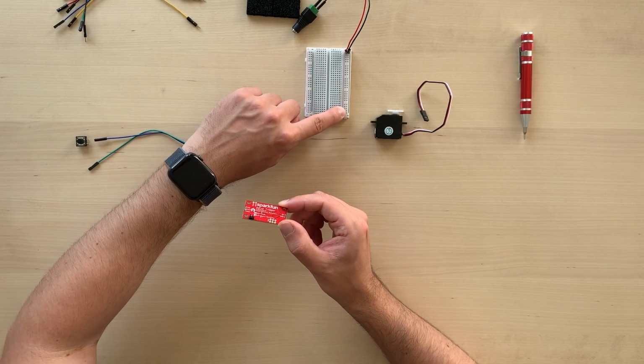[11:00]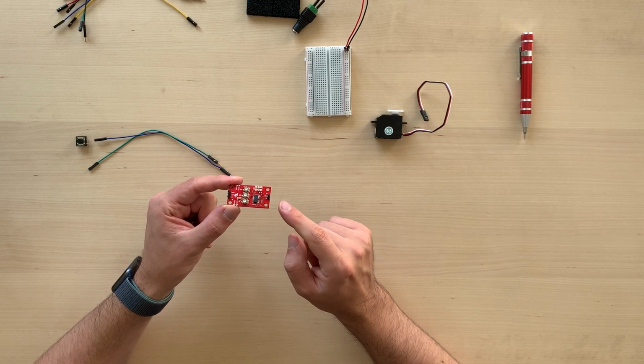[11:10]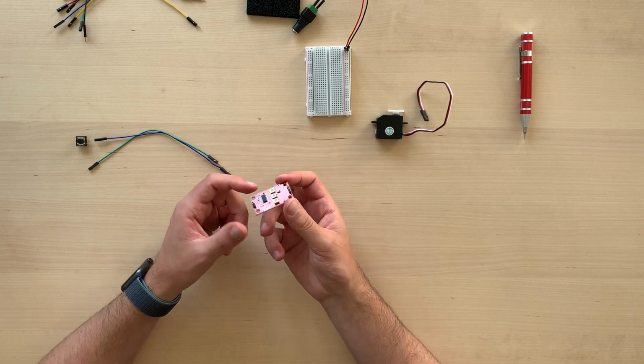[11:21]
So you see that we have two sides. On one side, we have two pins. And on the other side, we have two sets of pins. So the two pins that are just alone on one side will connect to the breadboard for power. While on the other side, we have two sets of pins. The one with only two pins will connect to the button using the jumper wires, while the three pins will connect to the servo, so our engine. So this is actually the right way to show you how this is going to be connected.
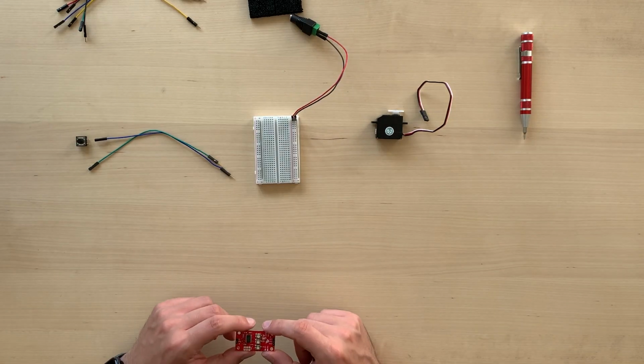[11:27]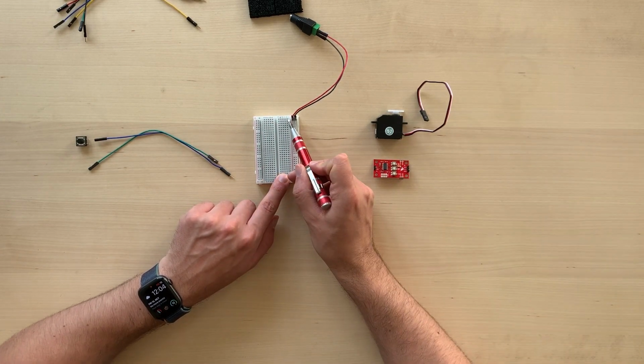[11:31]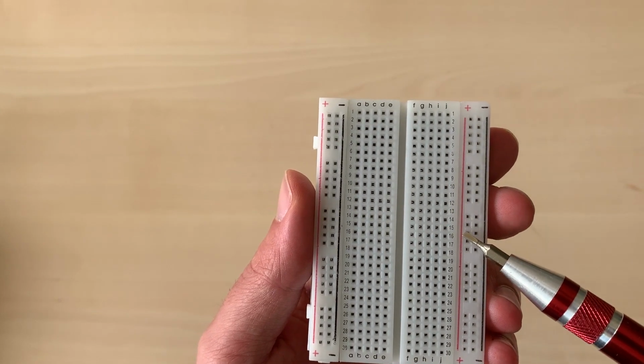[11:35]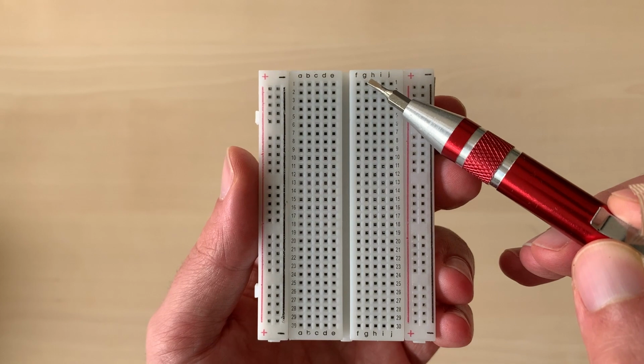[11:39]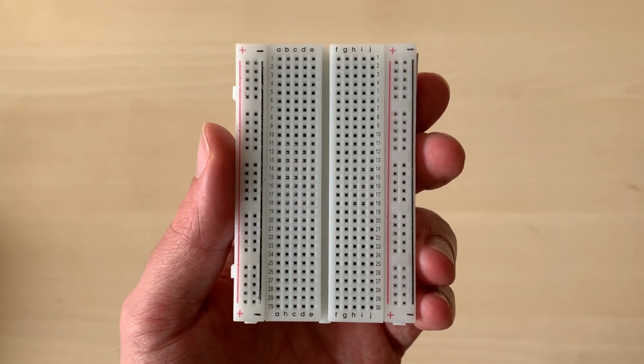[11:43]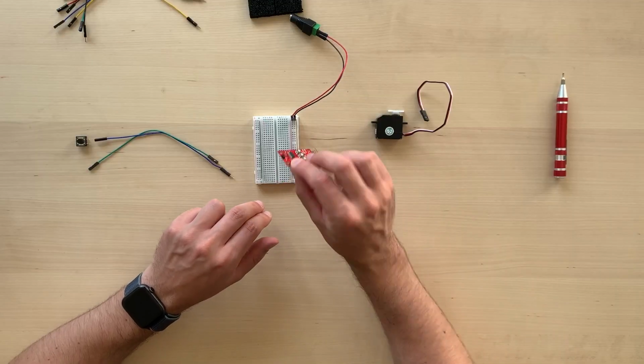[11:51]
So in order to connect our servo trigger, we need to understand how the connection in the breadboard works. You see that there are columns of numbers and letters. So when I'll tell you to connect something to, for example, D10 or F10, you need to find the letter D and the number 10. It's a bit like playing Battleship. So let's start with our servo trigger.
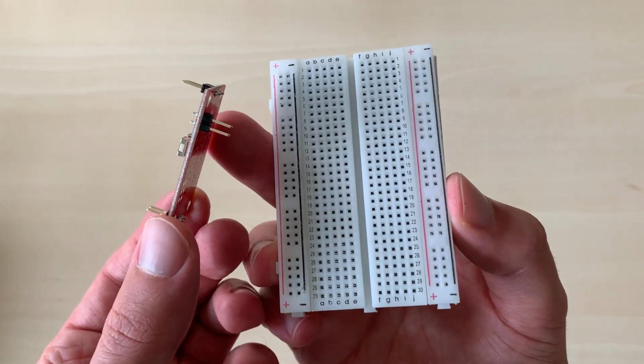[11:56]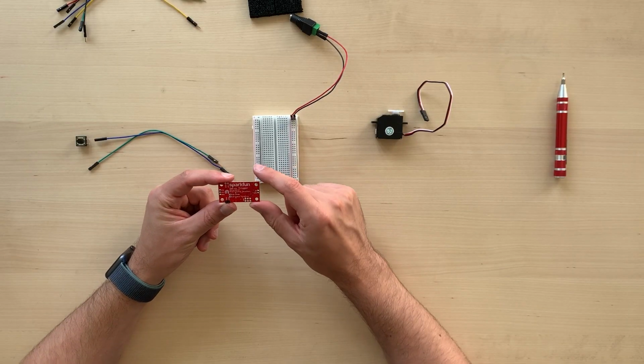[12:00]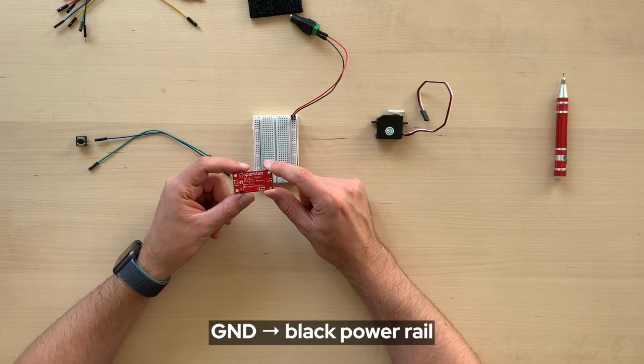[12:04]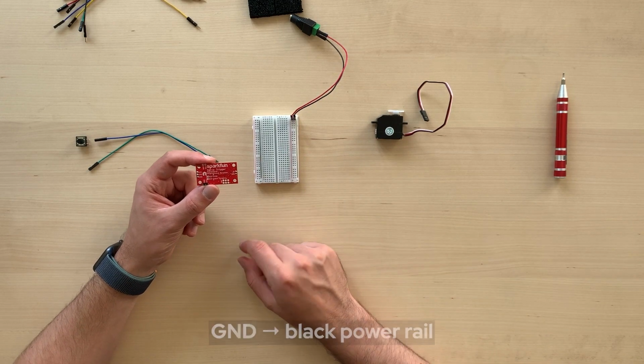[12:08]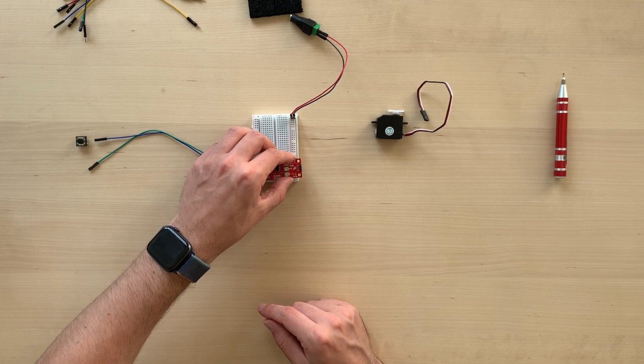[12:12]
Let's find the side that has only two pins and let's connect them to the breadboard. What we need to find is the GND pin. This will have to go on the black power rail on the right side, just like that. It should fit quite easily onto the breadboard.
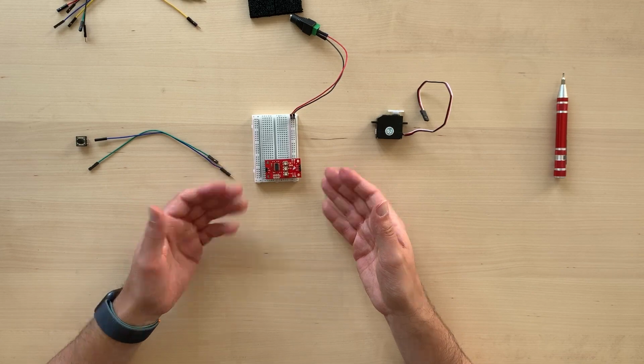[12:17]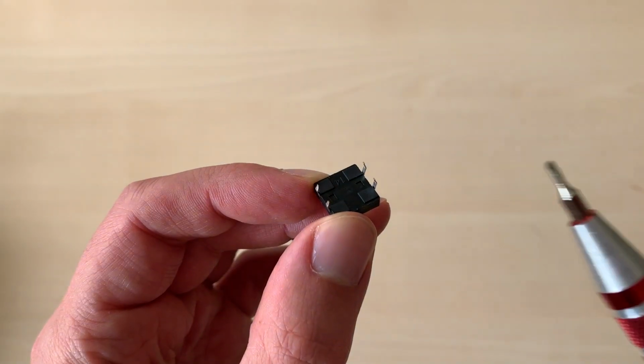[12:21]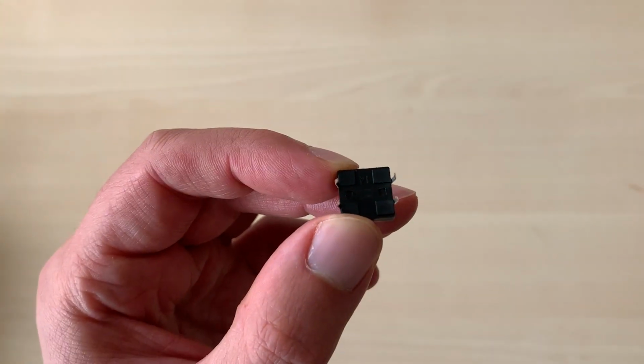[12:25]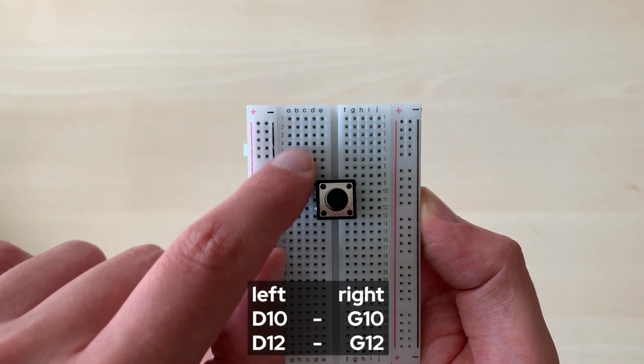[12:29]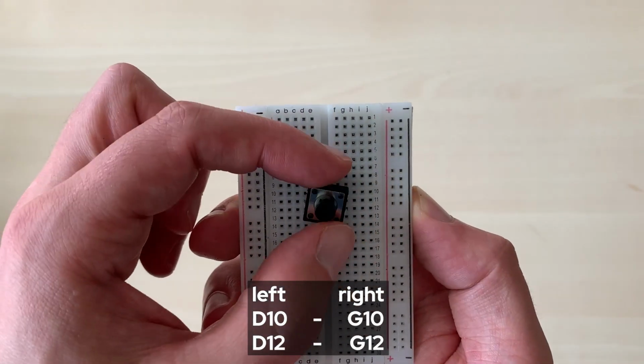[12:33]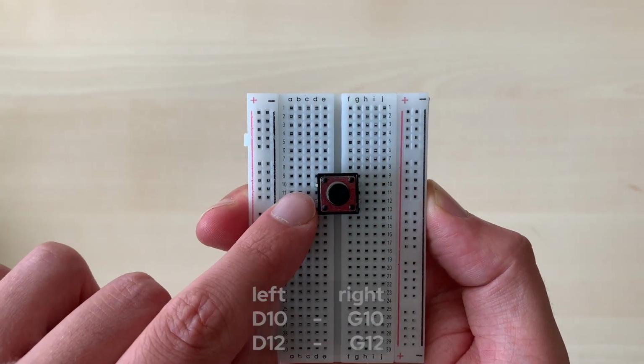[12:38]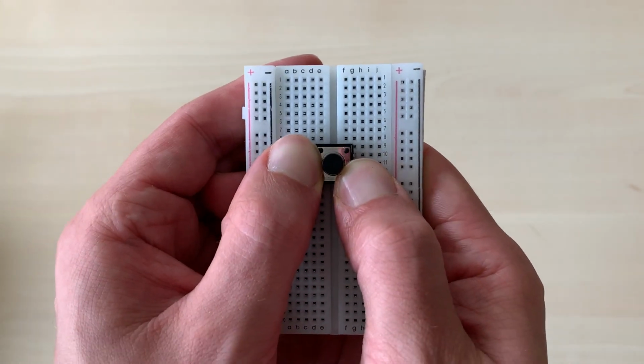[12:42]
Now, the next step is to connect our button. Our button has four pins underneath. What we need to do is to find D10 and D12 to align the button. On the right side, G10 and G12. So, like playing Battleship, we find the right spot and then we gently press the button in place.
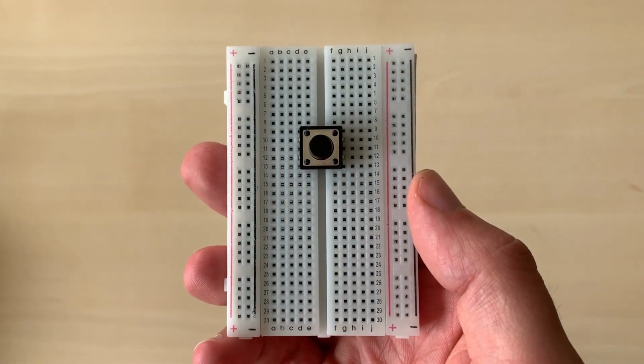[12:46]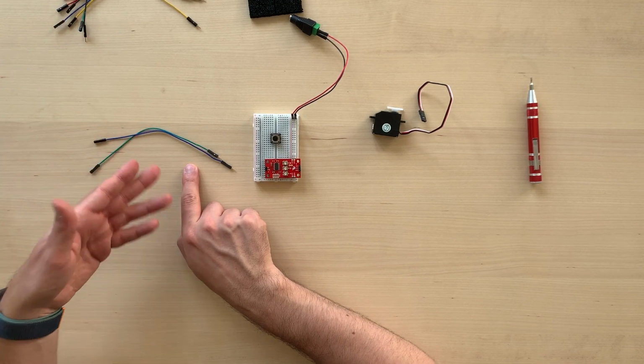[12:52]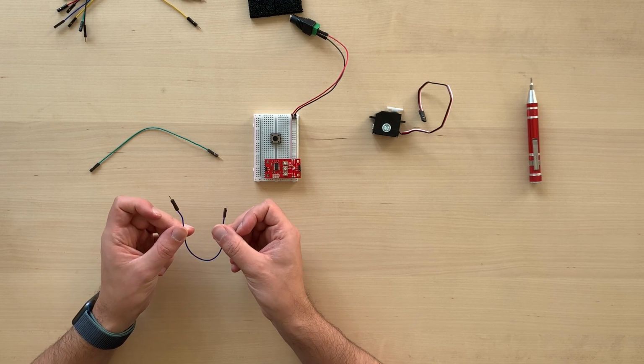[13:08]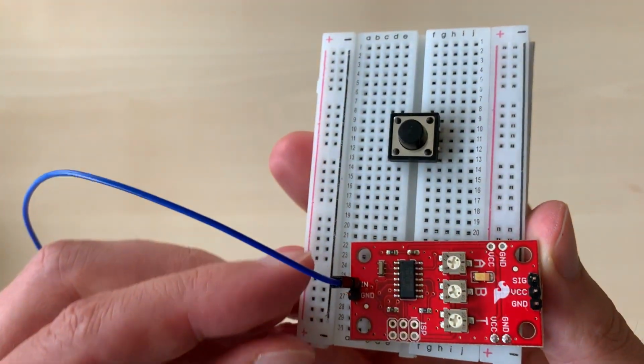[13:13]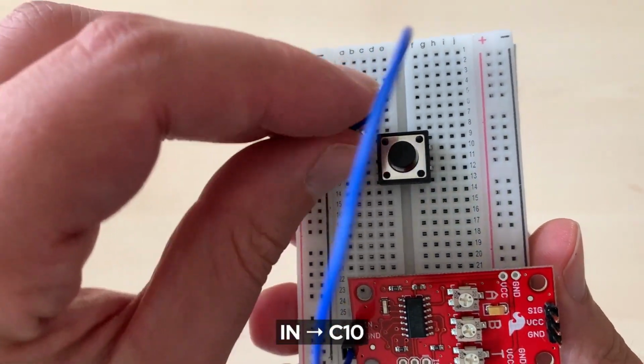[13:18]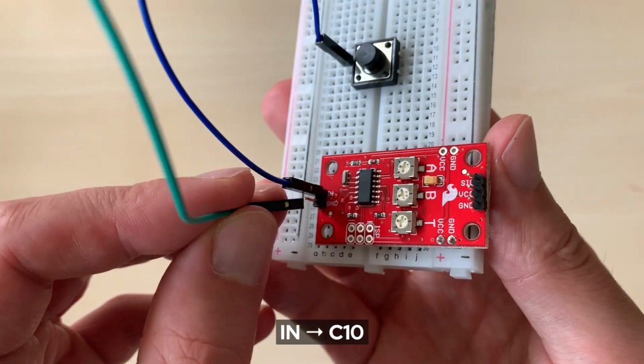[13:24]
Now, we need to connect the button to the servo board, and this is where the jumper wires will help us. Again, you can choose any color you want, but for me today, I will use the blue one. You see there are two parts. The plastic part is the female, and the one with the metal pin pointing out is called the male side. So we will start with the female side and connect it to the IN pin in our servo trigger. Our cable from IN will connect to C10 right next to the top left side of the button.
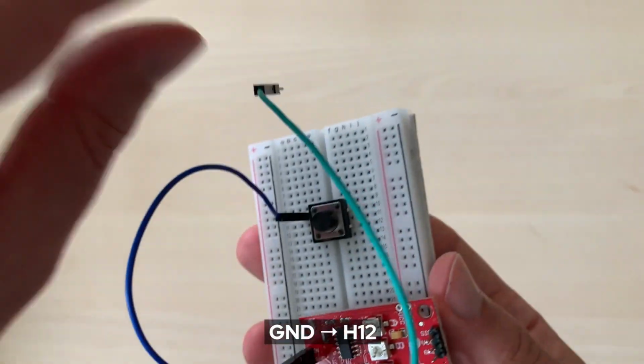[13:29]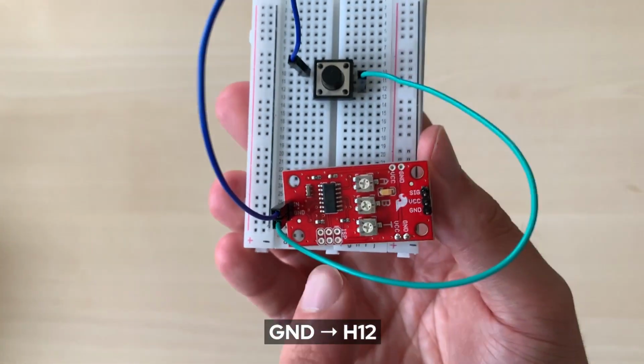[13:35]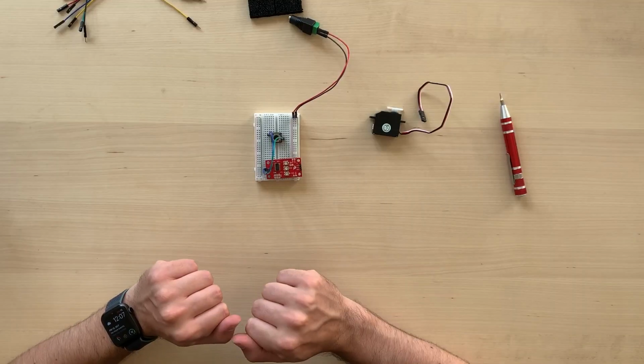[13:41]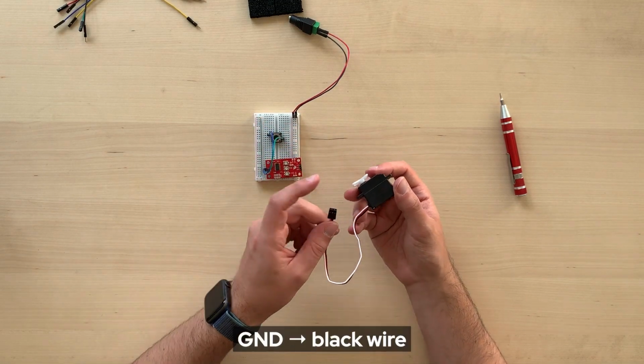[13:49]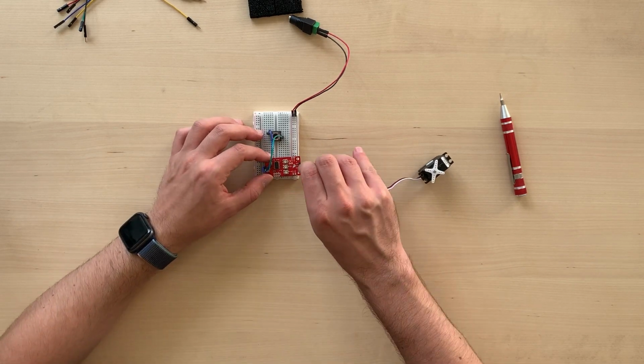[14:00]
Then our second wire, the female side, will connect to GND in the servo trigger, and the male side will connect with H12 on the right bottom side of our button. Now the last bit is to connect the engine, the servo, to the servo trigger. To do this, we just need to make sure that the GND pin on the servo trigger aligns with the black wire from the servo. And once you find this, you just need to slide the three-pin connector in place. And voila, this is our circuit complete.
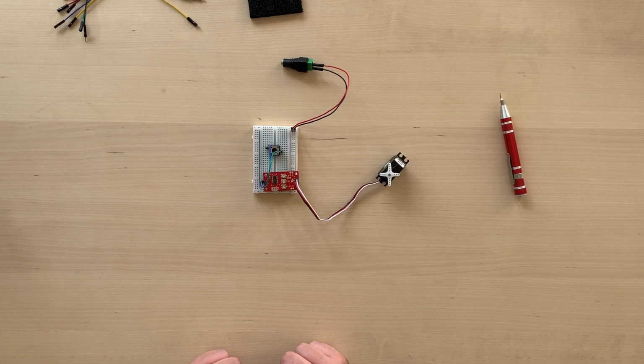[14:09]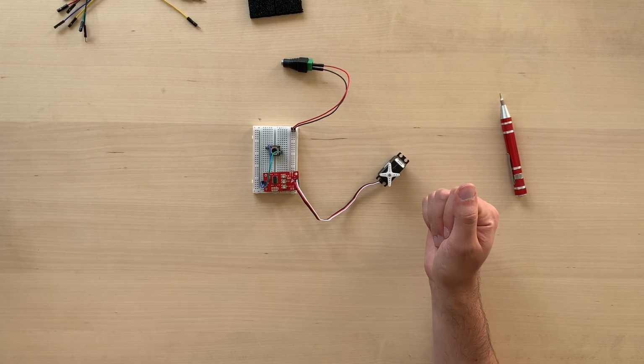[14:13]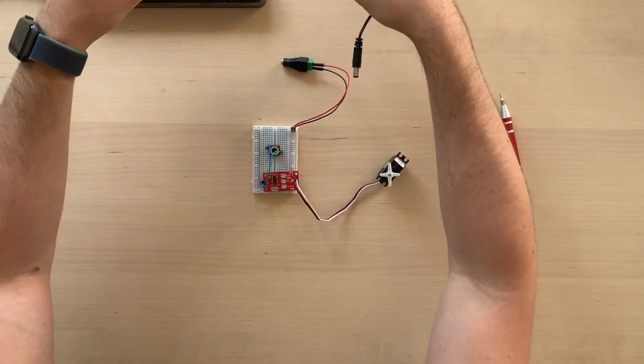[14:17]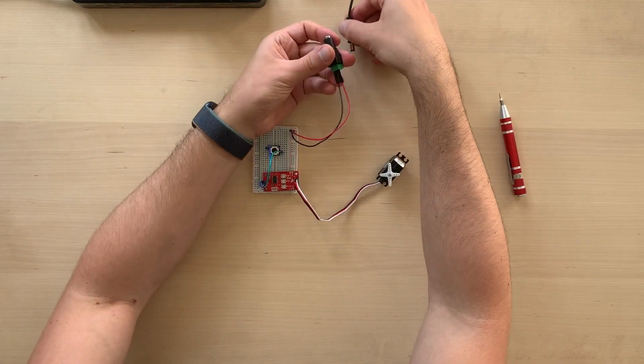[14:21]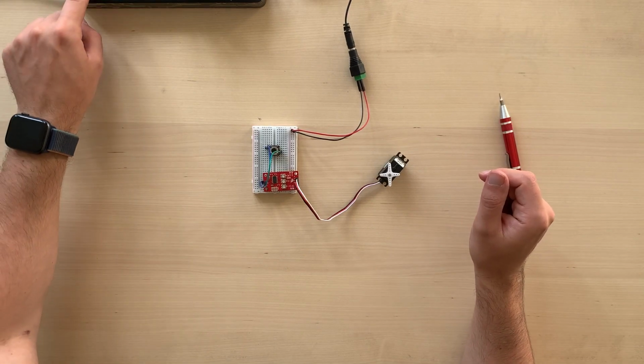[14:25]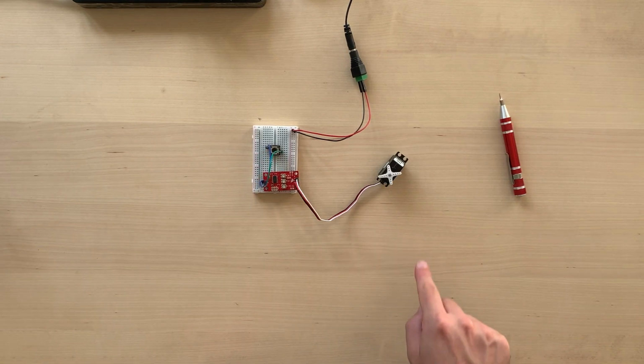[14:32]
Now, the next thing that we need to do is, of course, to test it. And to do that, we will need power. So let's put our wall adapter into our power socket and let's connect the power to the barrel jack. Everything seems ready, so let's start. And oh, look at that. The servo is actually moving. And if we click the button, the direction should change.
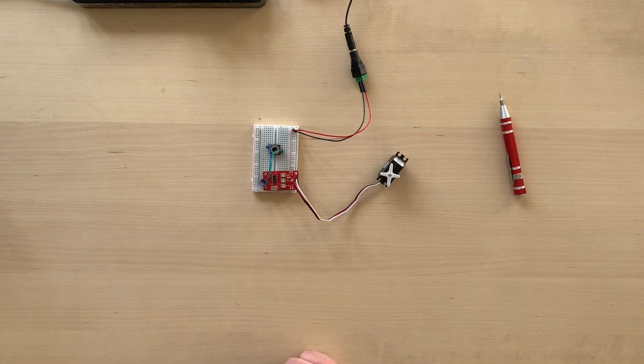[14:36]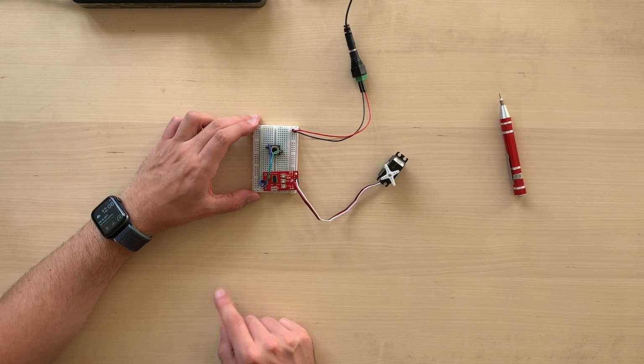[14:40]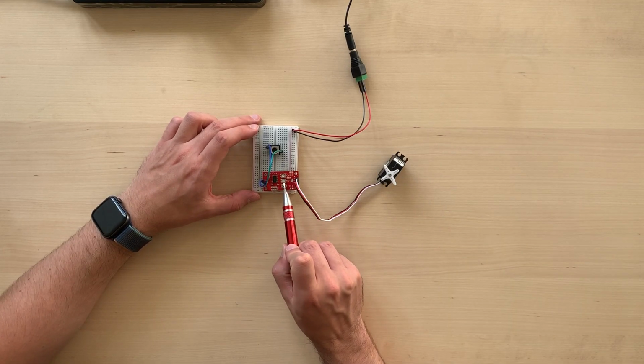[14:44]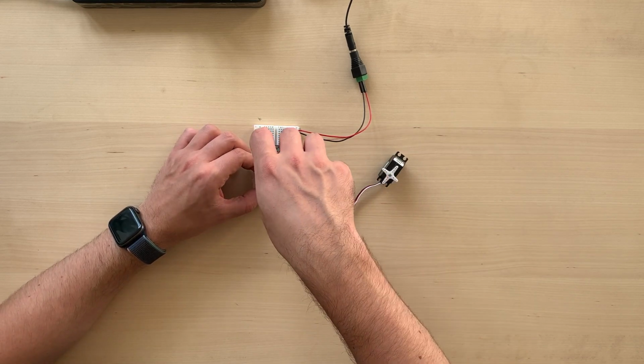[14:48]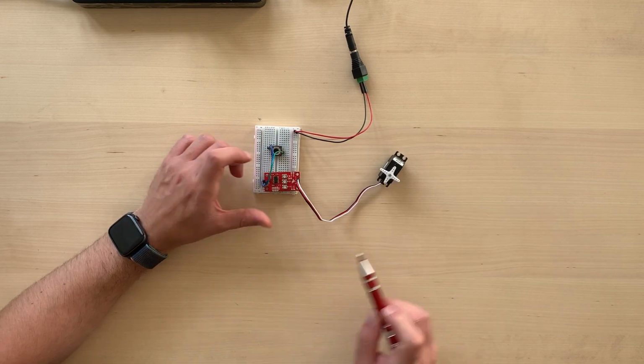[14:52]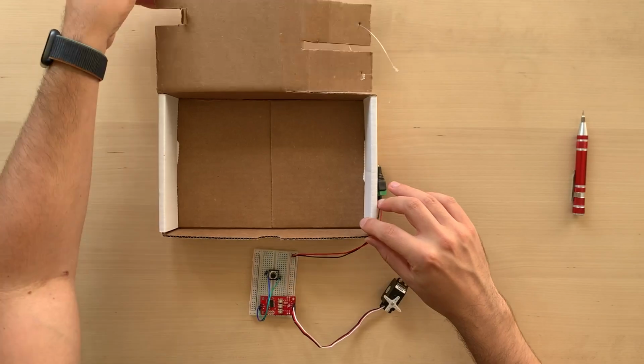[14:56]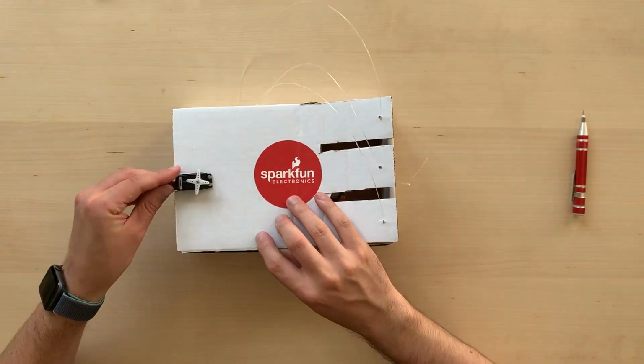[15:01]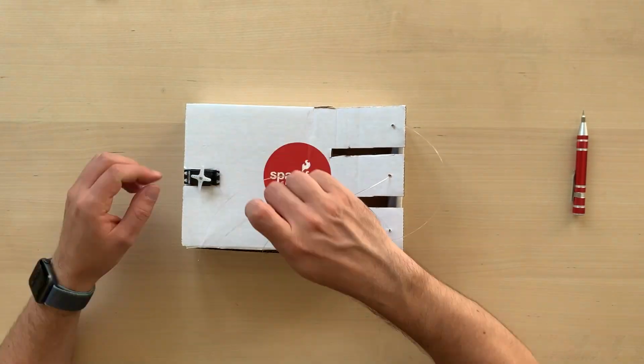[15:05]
One important thing that you can also play with are the A and B knobs on the servo trigger. And these are called potentiometers. And you can actually use the little pen screwdriver to play around with speed and with the orientation. Once you're ready, we can put the board into the box and we just need to make sure that we can fit the servo trigger in the little opening we carved out before.
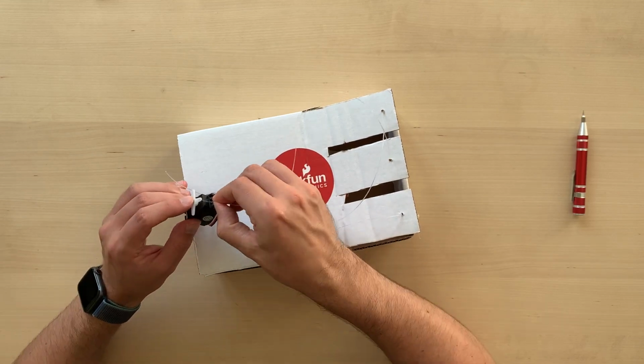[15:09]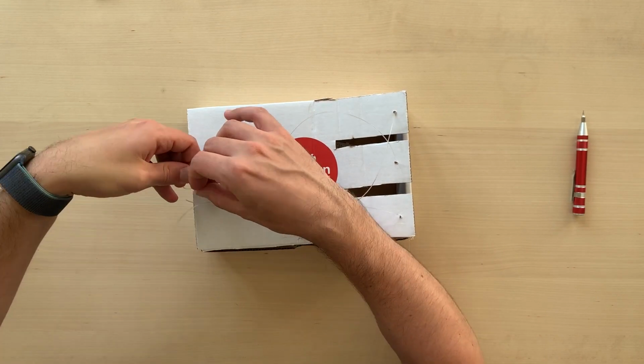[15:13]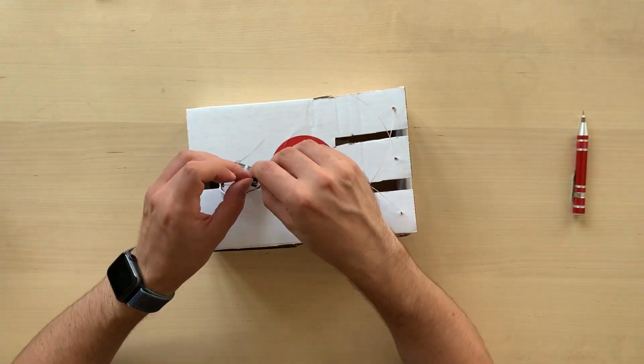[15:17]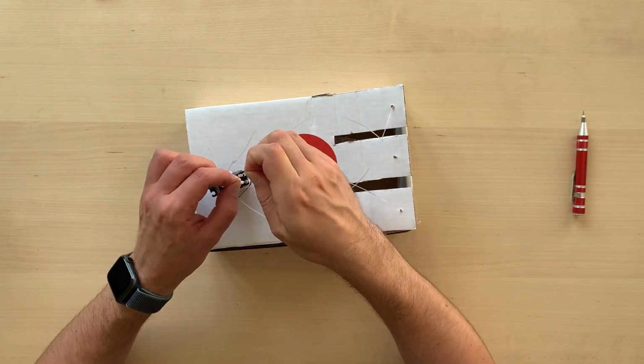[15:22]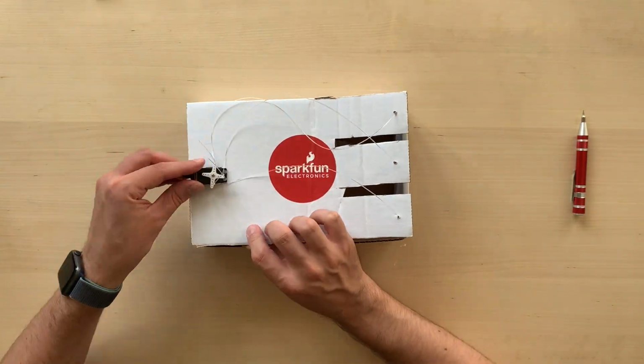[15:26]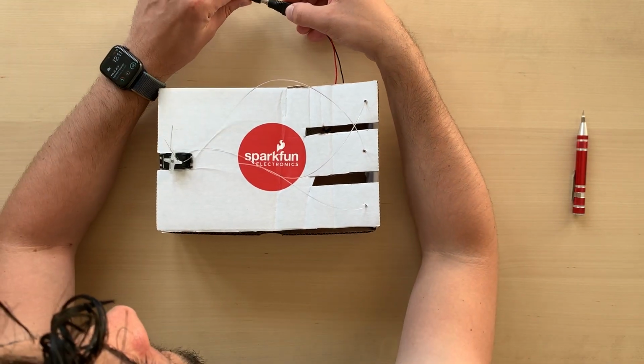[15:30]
And the last thing we have to do is to connect the wires of the fingers onto the servo. Now, my suggestion in this case is to thread them from underneath upwards and to tie the knot on top. This will help you to actually wrap the wire around the servo, so it will actually work better. Now we're actually ready to test. So let's fish out our barrel jack. Let's connect it to the power.
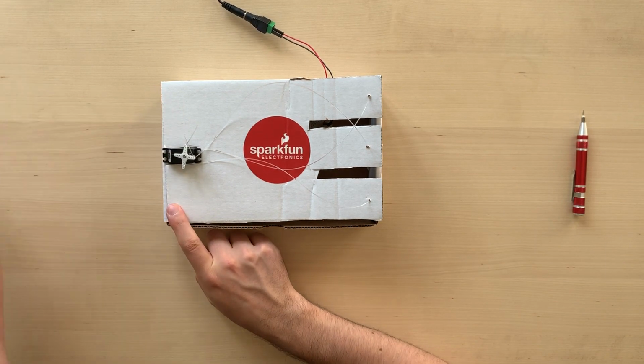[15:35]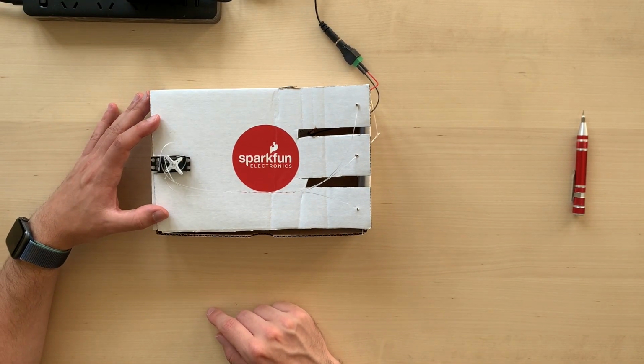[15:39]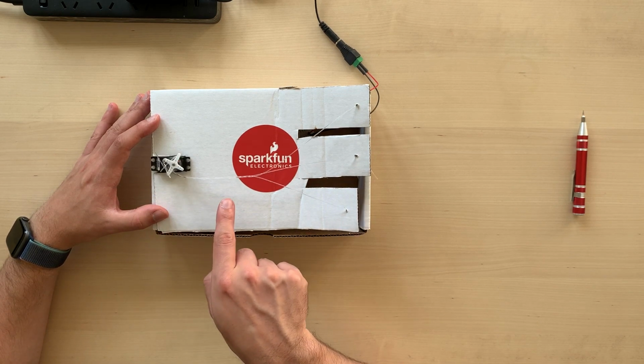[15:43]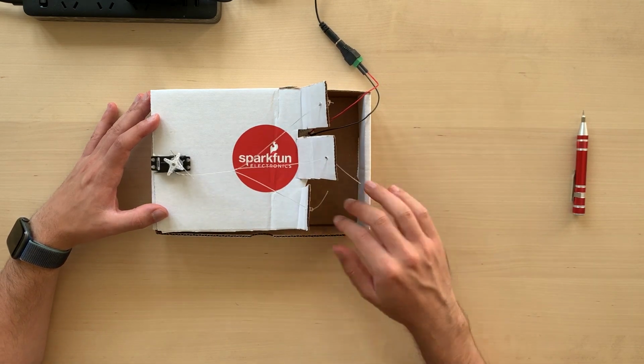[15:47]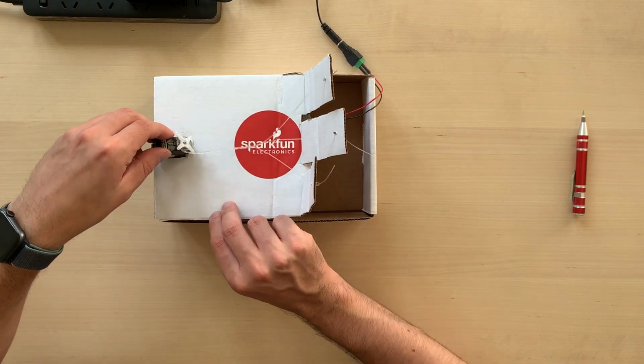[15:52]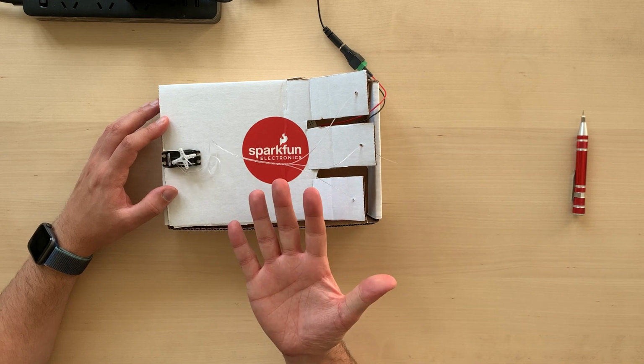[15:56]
So you see that because we thread the wires from underneath, as the servo turns, the wire spins around the center and it actually closes the fingers. And if we click the button, we actually see that the turning direction changes and the hand opens again, which is pretty impressive, right? Oh, that looks fantastic.